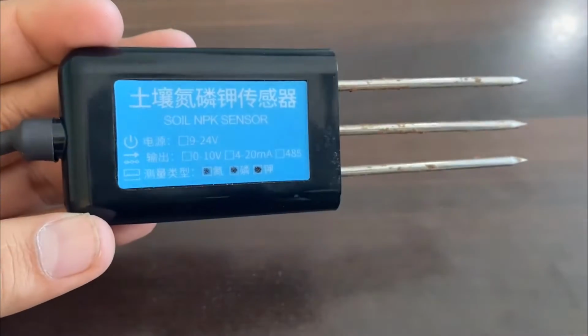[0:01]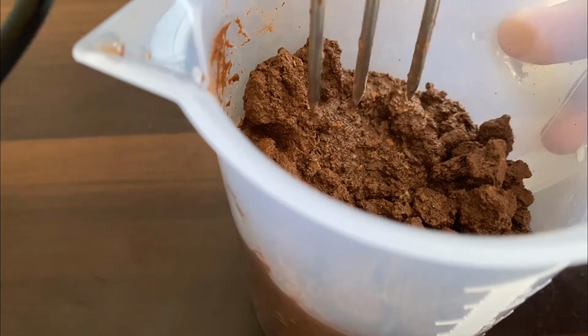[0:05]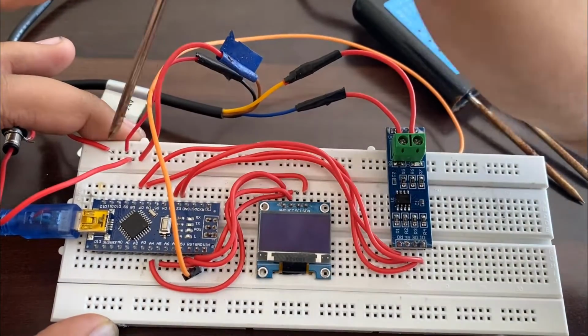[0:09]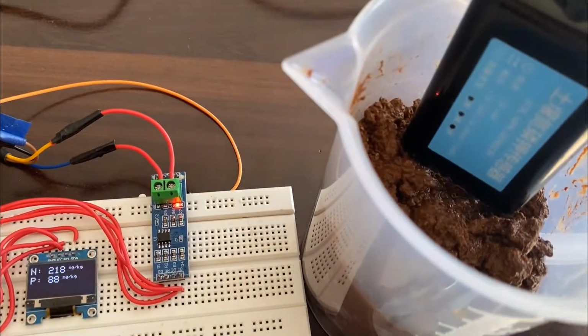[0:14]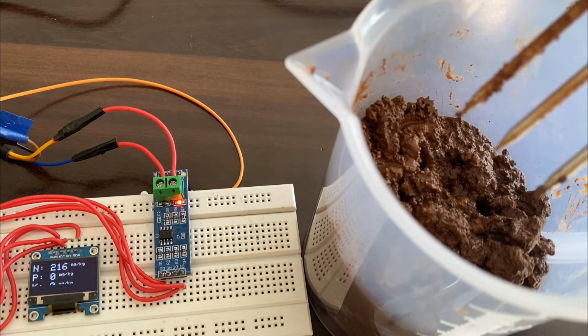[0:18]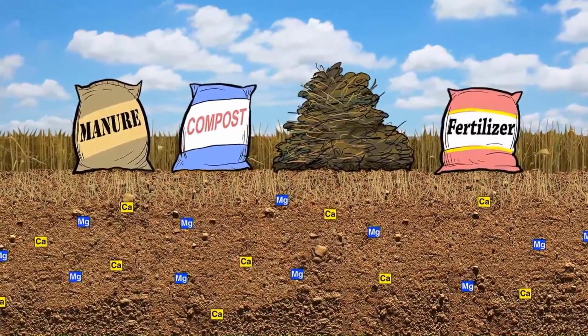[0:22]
In this video, we will learn about the interfacing of soil NPK sensor with Arduino and OLED display. The soil nutrient content can be easily measured using NPK soil sensor and Arduino. Measurement of soil content like nitrogen, phosphorus and potassium is necessary to determine how much additional nutrient content is to be added to the soil to increase the crop fertility.
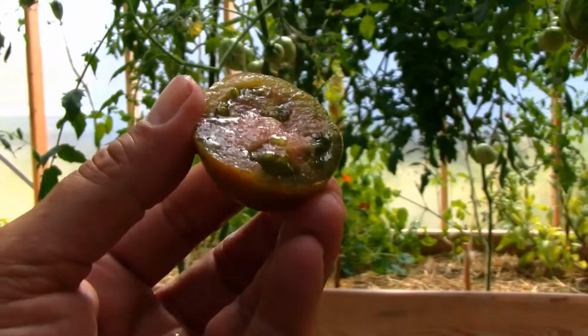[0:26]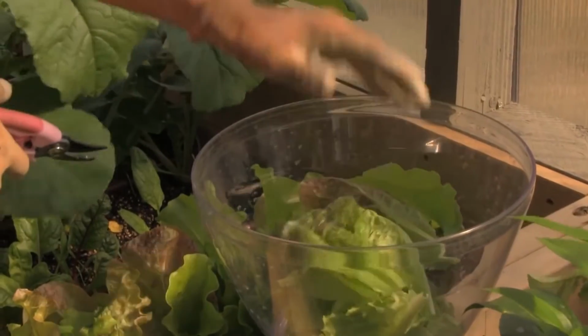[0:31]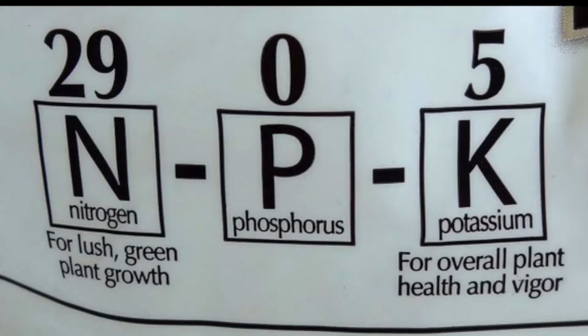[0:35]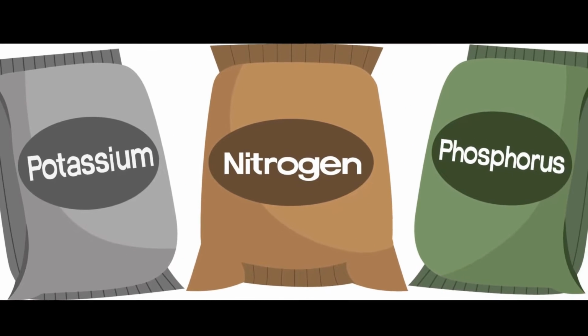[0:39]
The soil fertility is detected using NPK sensor. A major component of soil fertilizer is nitrogen, phosphorus, and potassium. The knowledge of the soil nutrient concentration can help us to learn about the nutritional deficiency or excess in soil used to endorse plant production.
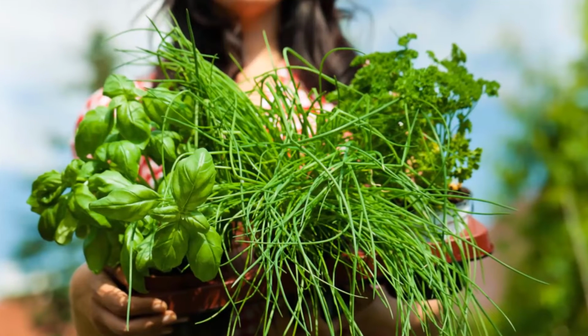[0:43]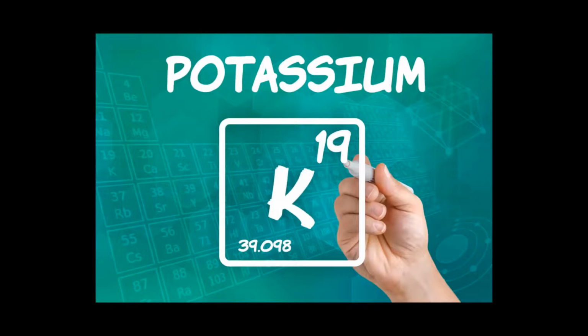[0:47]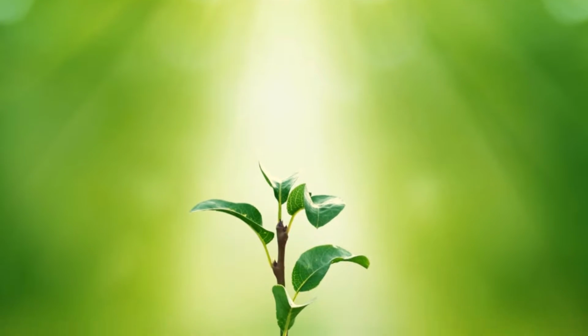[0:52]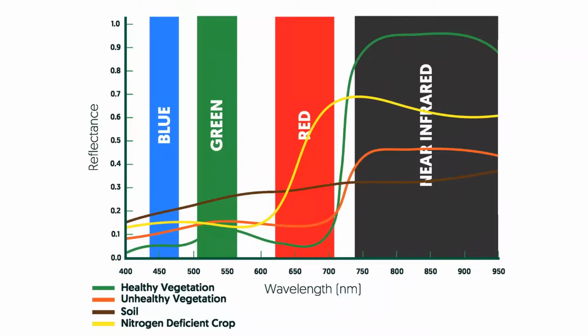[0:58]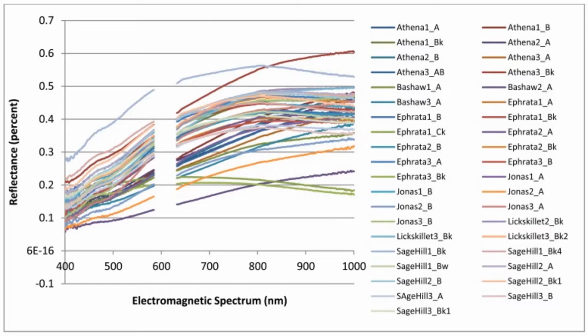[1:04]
There are multiple methods of measuring the soil nutrient content, like using some optical sensors or using the spectrometer. But the spectral analysis method of determining the nutrient content is not convenient, and the drawback is the data are only 60 to 70% correct. While comparing the spectral analysis method with traditional wet chemistry methods, the accuracy of the product is yet to be fully resolved given the paucity of the data in that regard.
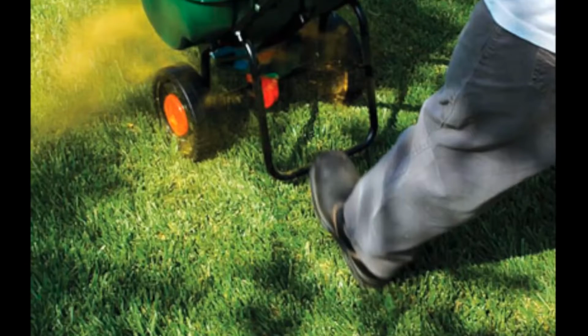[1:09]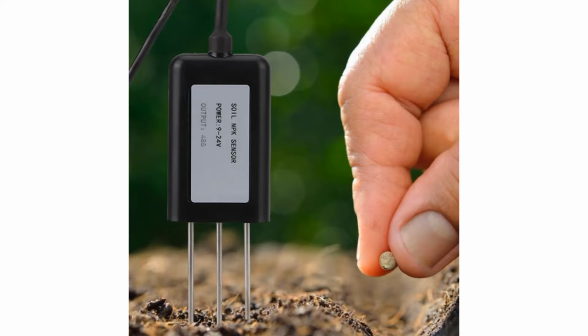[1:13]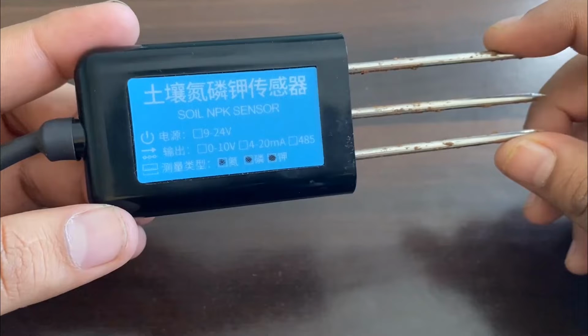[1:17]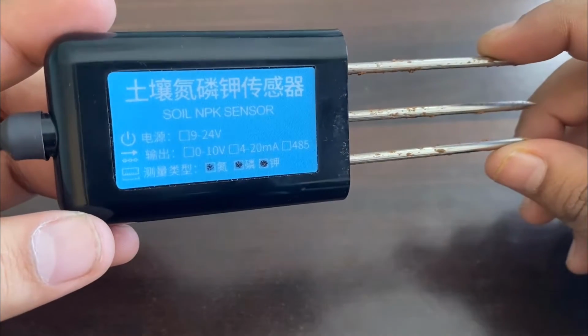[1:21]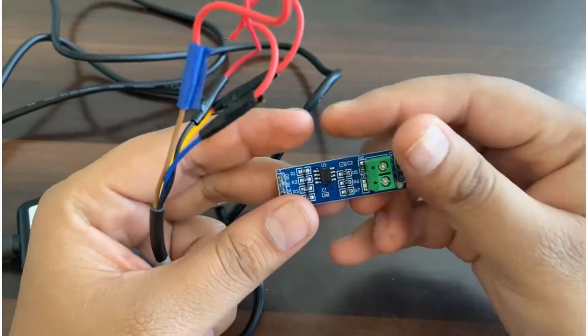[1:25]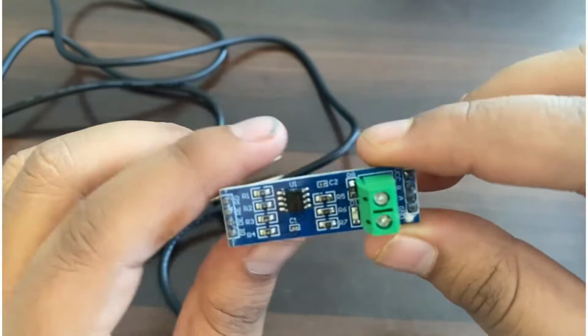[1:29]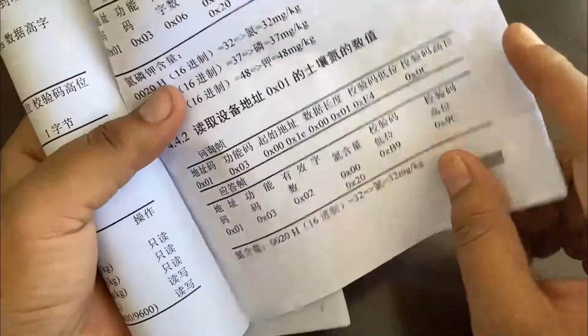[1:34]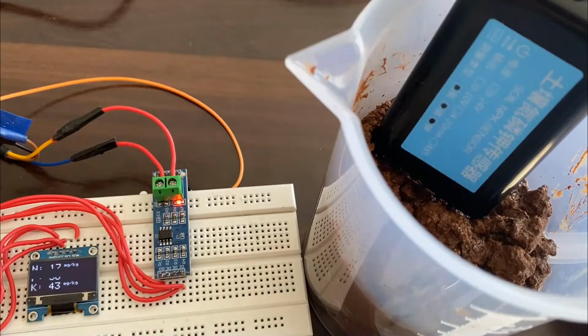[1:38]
So here we will use a GXCT soil NPK sensor to detect nitrogen, phosphorus and potassium in a soil. The GXCT soil NPK sensor is low cost, quick responsive, high precision and portable, and it works with Modbus RS485. The advantage of this sensor over a traditional detection method is that it gives very fast measurement and data are highly accurate. All you need is to insert its probe in soil and get the reading using Arduino. Thus, you can easily make your own soil NPK meter.
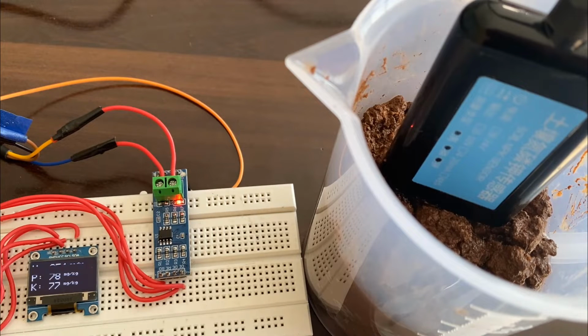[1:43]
So let's learn in detail about the interfacing of soil nutrient sensor or NPK sensor with Arduino and display the NPK data in OLED display.
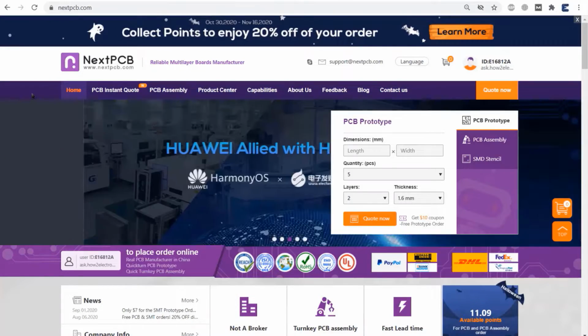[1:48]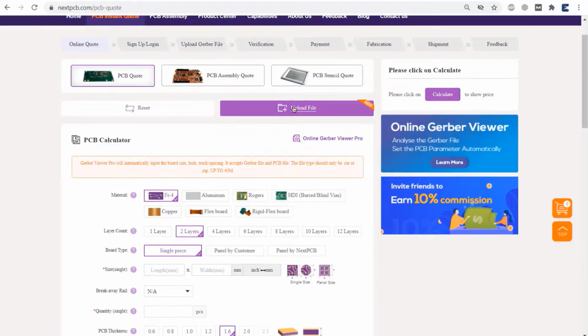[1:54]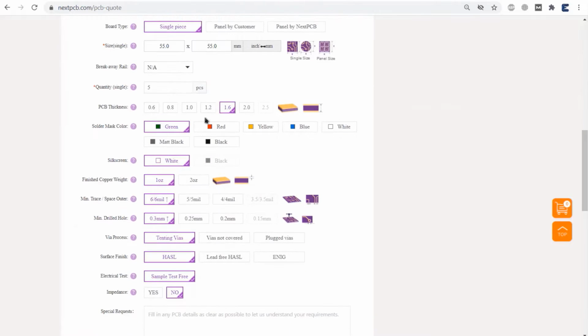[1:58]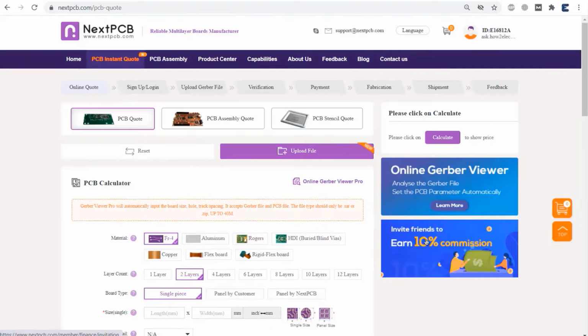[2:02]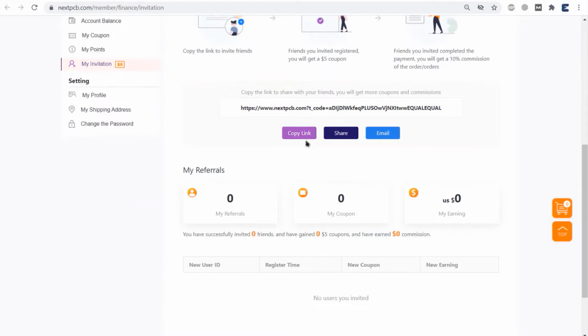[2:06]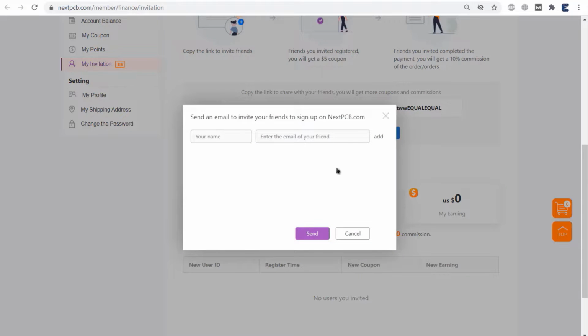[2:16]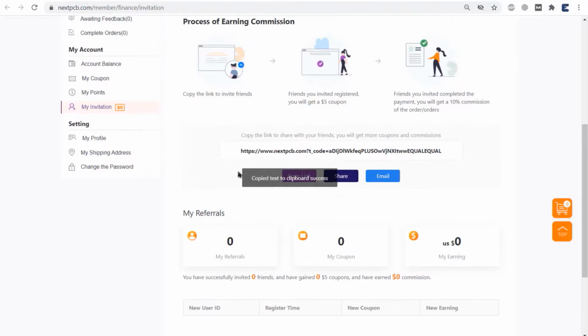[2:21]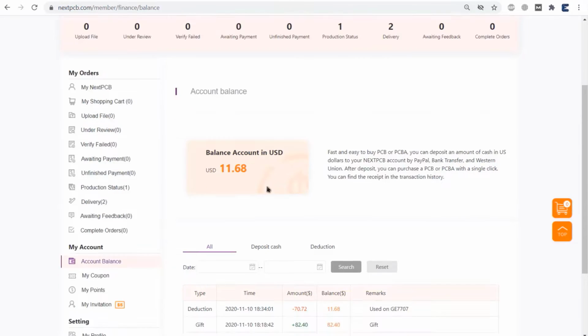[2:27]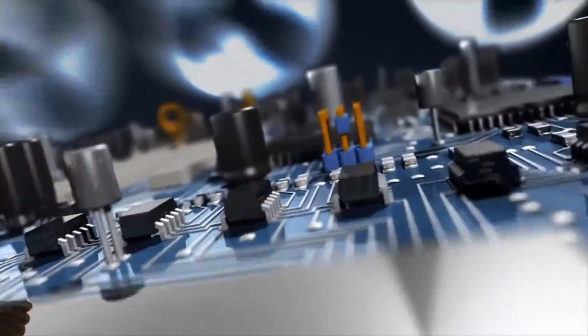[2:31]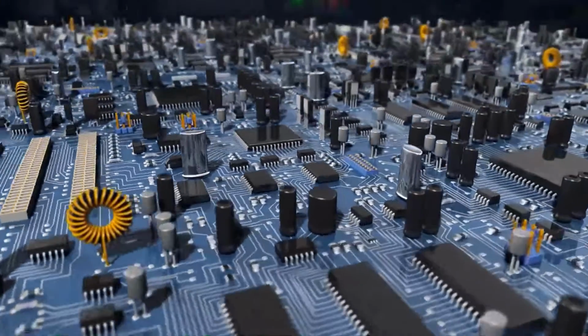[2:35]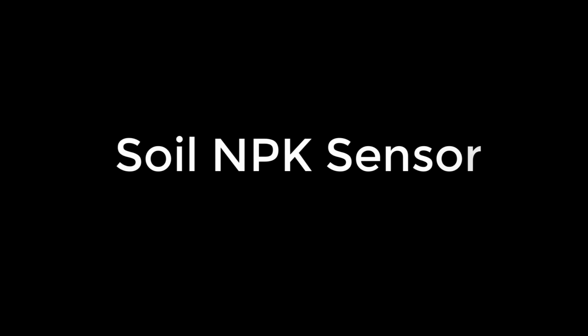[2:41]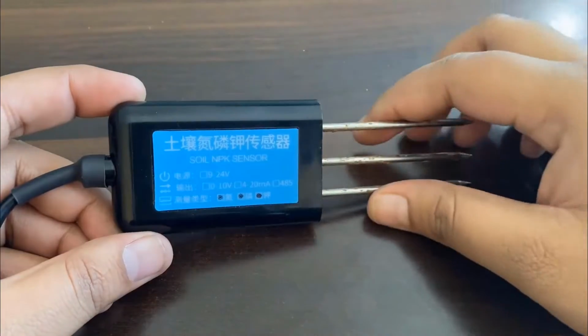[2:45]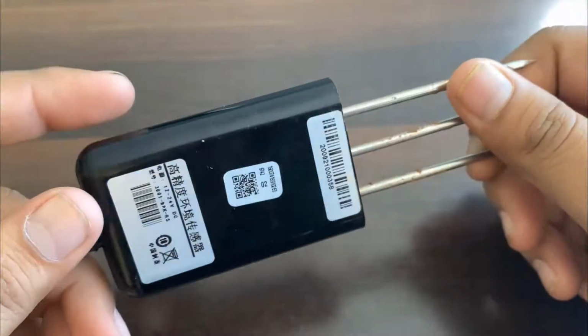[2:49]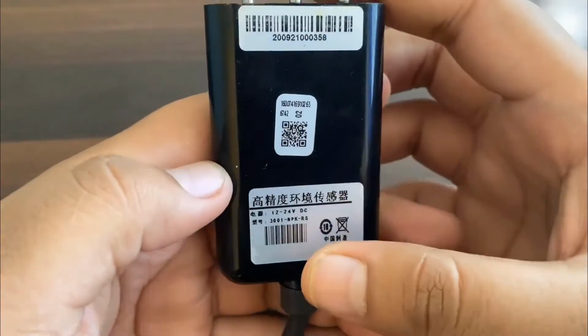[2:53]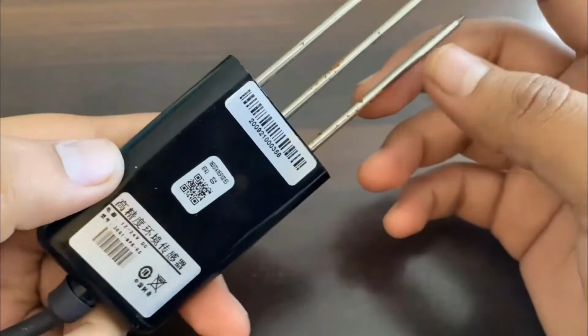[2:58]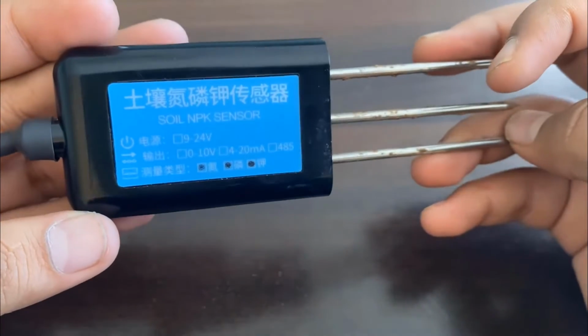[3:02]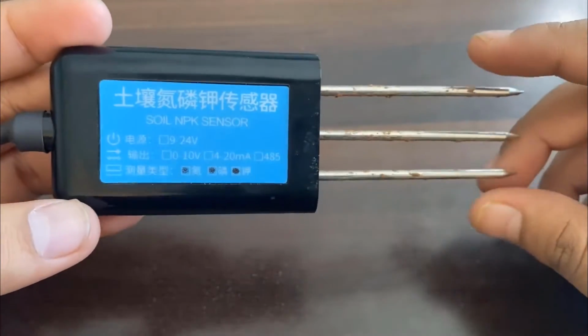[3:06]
Now let's learn about the soil sensor first. So this is a soil NPK sensor that I recently got from some Chinese vendor. This soil sensor is suitable for detecting the content of nitrogen, phosphorus and potassium in the soil. It helps in determining the fertility of the soil, and the sensor can be buried in soil for a long time. It has a high quality probe, rust resistance, electrolytic resistance, salt and alkali corrosion resistance. Therefore, it is suitable for all kinds of soil.
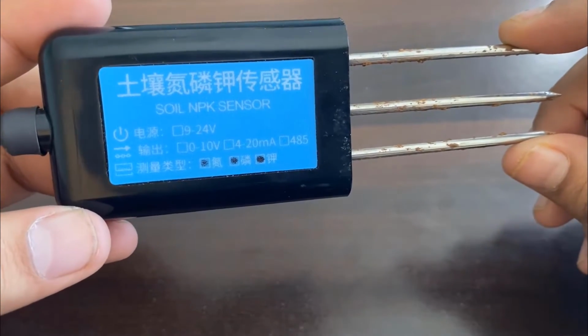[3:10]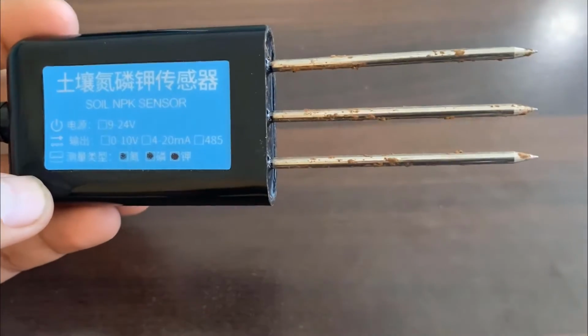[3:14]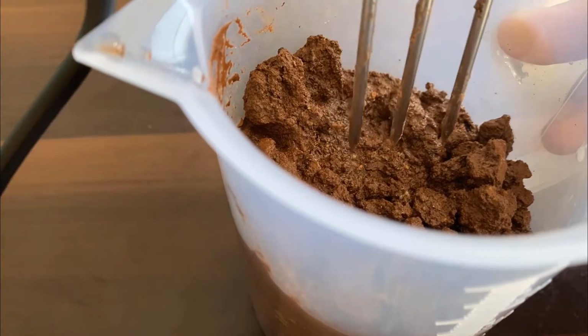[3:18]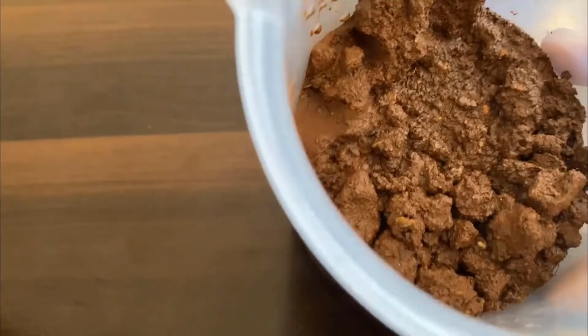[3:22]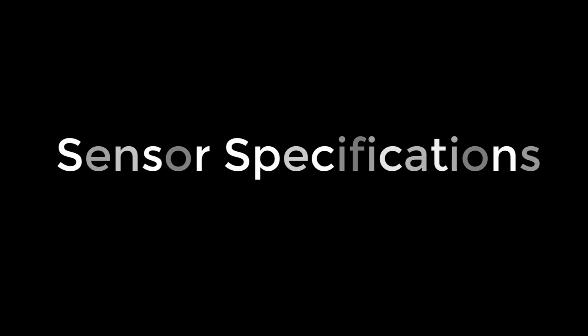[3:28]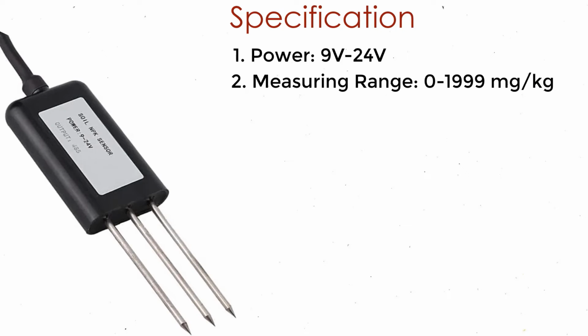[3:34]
The sensor has high measurement accuracy, fast response speed, and good interchangeability, and it can be used with any microcontroller. The sensor operates on 9 to 24 volt and power consumption is very low. While talking about the accuracy of the sensor, it is up to within 2%. Now let's see some of its specification. It works between 9 to 24 volt supply. The measuring range is from 0 to 1999 mg per kg.
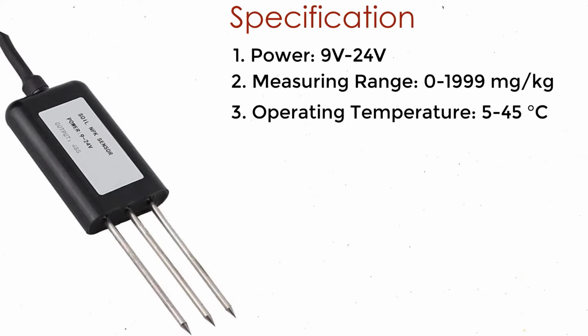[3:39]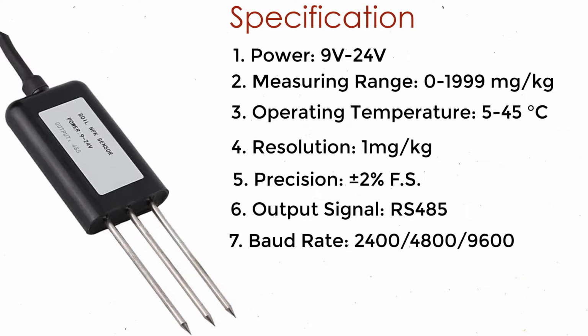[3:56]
The operating temperature is between 5 to 45 degrees Celsius. The resolution of NPK data is 1 mg per kg. While talking about the precision, it's up to 2% plus or minus. The output signal can be read using a Modbus RS485. It has multiple baud rates like 2400, 4800 and 9600. The sensor has a very hard protective layer made using IP68 rating.
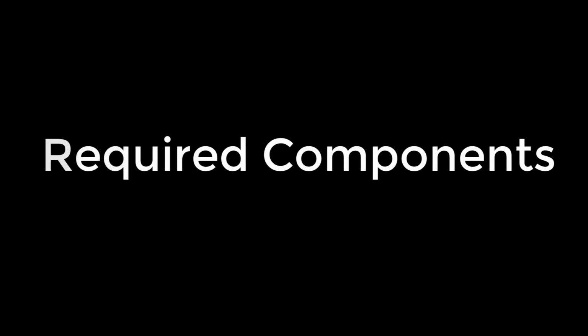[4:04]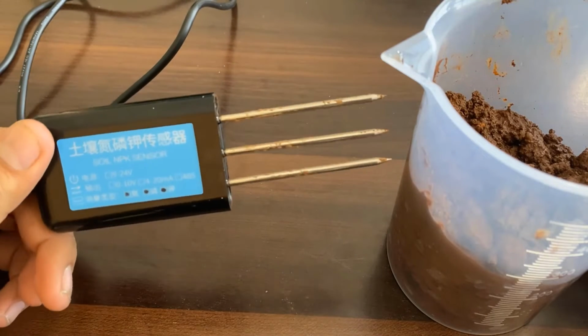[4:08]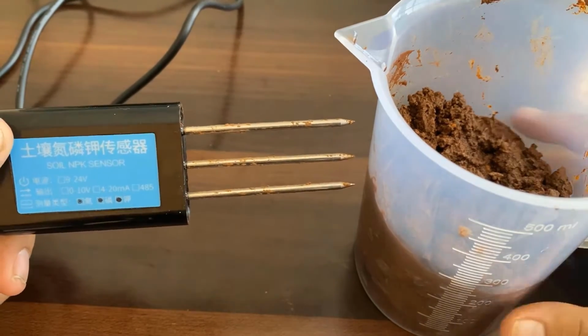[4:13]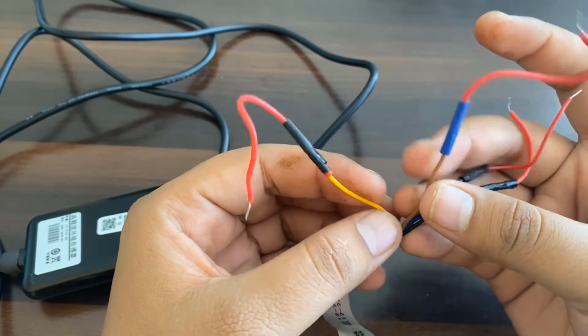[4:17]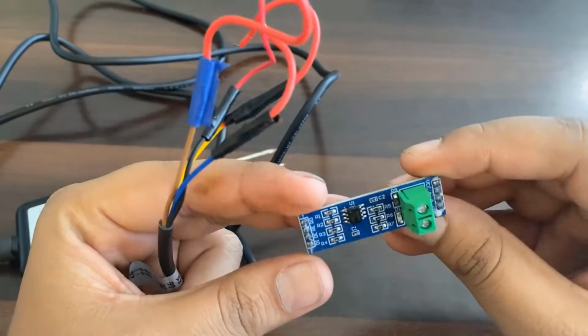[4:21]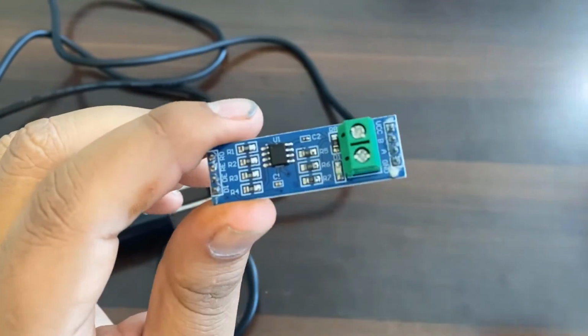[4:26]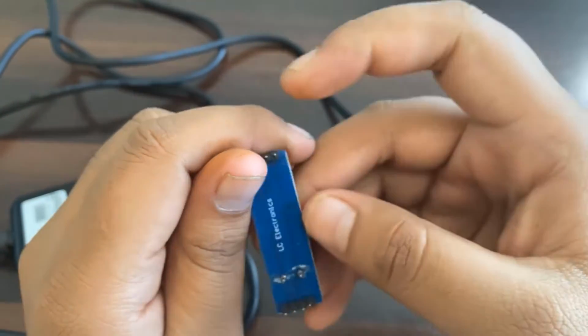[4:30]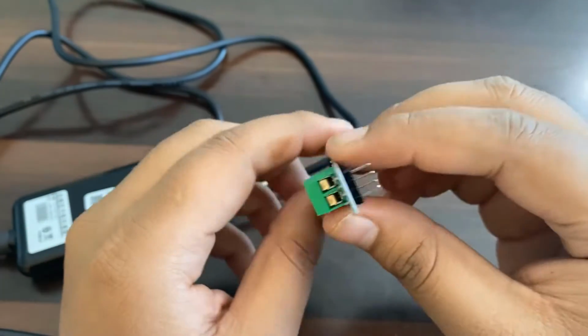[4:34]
To make a soil NPK meter, we need following components. As already discussed, we need soil NPK sensor and few samples of different type of soil. Meanwhile, I'm using red soil from my garden. The sensor has 4 wires and works using Modbus to TTL converter along with 12 volt supply. So here is the MAX485 Modbus module from Maxim Integrated. The module needs to be connected to the NPK sensor to get the NPK reading. I have explained in detail about this module in my website article. You can read about all the pin functions.
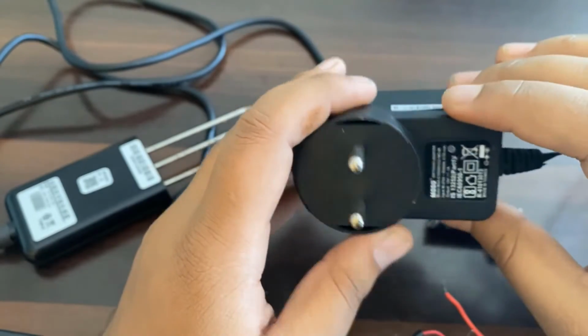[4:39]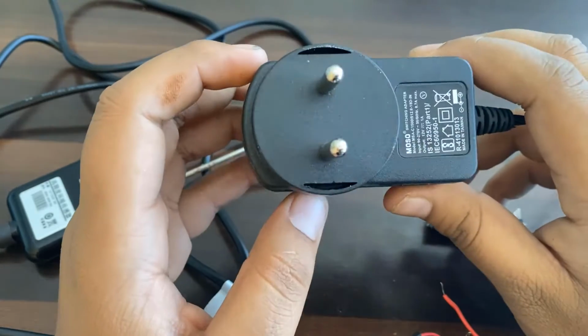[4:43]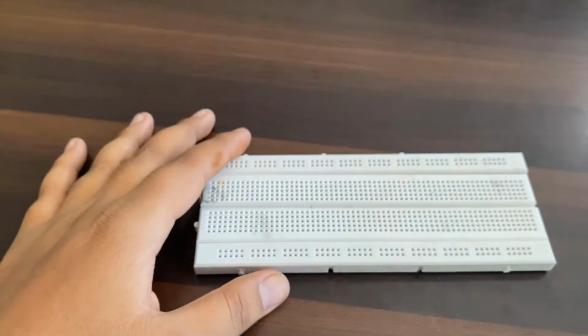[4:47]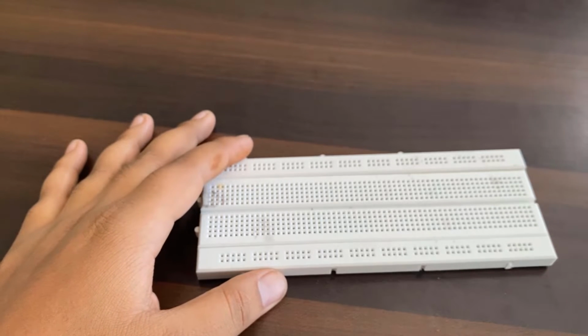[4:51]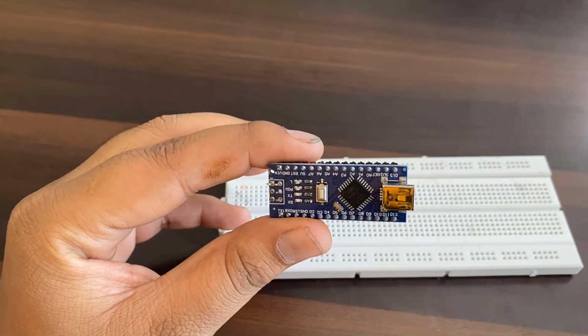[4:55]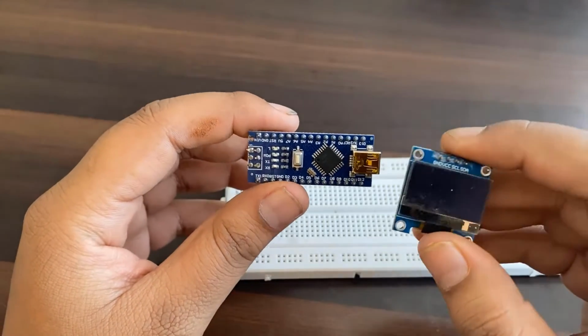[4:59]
We need a 12 volt DC adapter, or you can use any voltage supply from 9 volt to 24 volt to power on the sensor. I have assembled the entire circuit on a breadboard, so you may need a breadboard for that too. Apart from the breadboard, you will need any Arduino board. In my case, I'm using an Arduino Nano board, which is breadboard friendly. Similarly, I used an SSD1306 OLED display where I can display the NPK data. I've shared the purchase link for all the components.
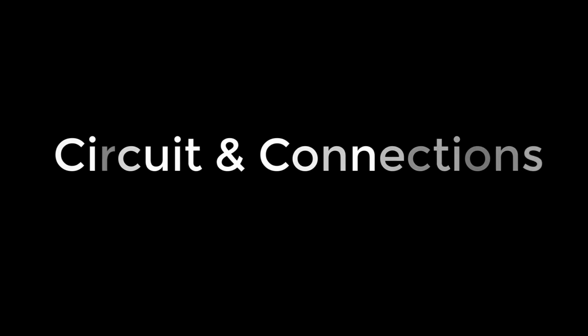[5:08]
So here is the complete schematic and circuit for this project. The RO and DI pins from the Modbus module are connected to D2 and D3 of Arduino using software serial. Similarly, we have to enable DE and RE high, which is done by connecting them to the D7 and D8 pins of Arduino. The NPK sensor has 4 wires.
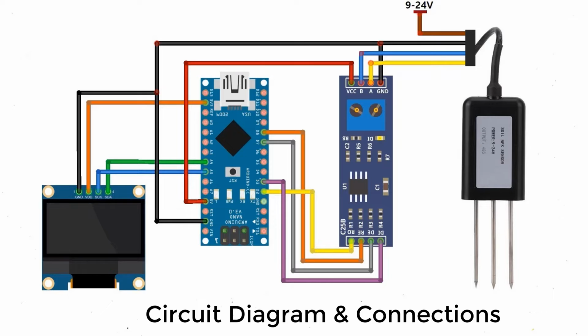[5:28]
The brown one is VCC, which needs a 9V to 24V power supply. The GND pin, which is black in color, needs to be connected to the ground of Arduino. The blue wire, which is the B pin, is connected to the B pin of MAX485. And the yellow wire, which is the A pin, is connected to the A pin of MAX485.
The SSD1306 OLED display is an I2C module. The OLED display VCC and GND are connected to 3.3V and ground of Arduino. Similarly, its SDA and SCL pins are connected to the A4 and A5 of Arduino.
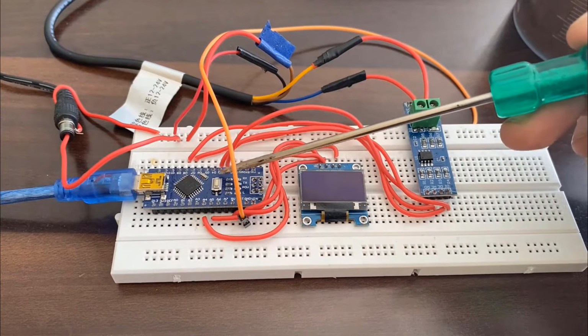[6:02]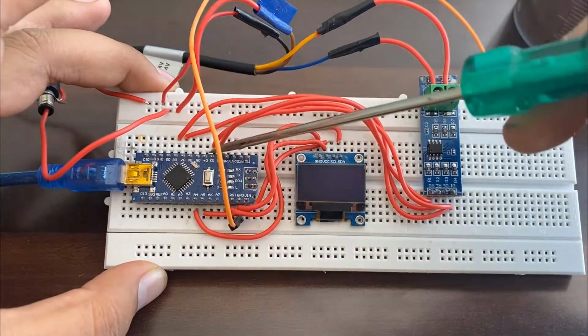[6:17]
So here is the complete assembly on the breadboard. This is the Arduino Nano board. This one, the OLED display, is connected through the I2C pins of Arduino. The MAX485 Modbus pins are connected exactly as per the circuit. The sensor's blue wire and yellow wire are connected to Modbus B and A pins. And I use 12V to power on the sensor.
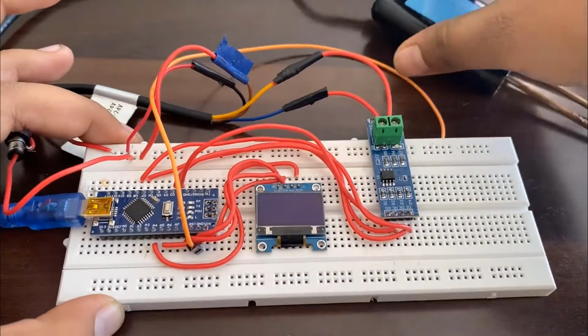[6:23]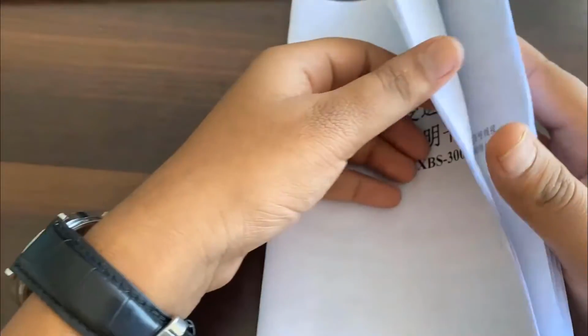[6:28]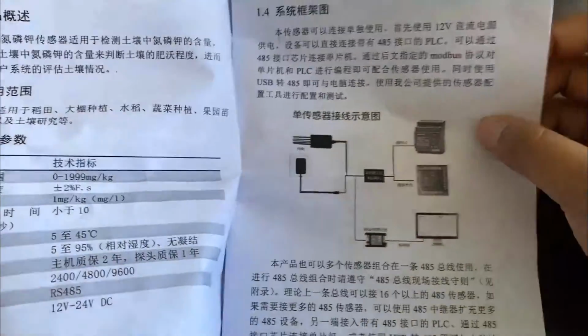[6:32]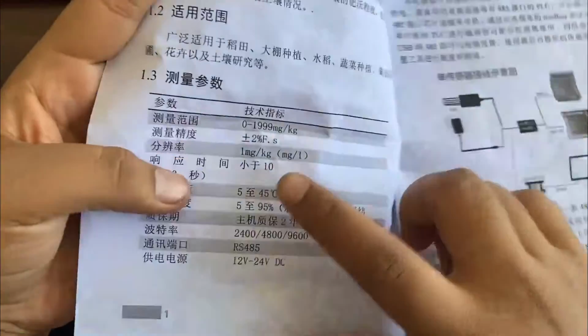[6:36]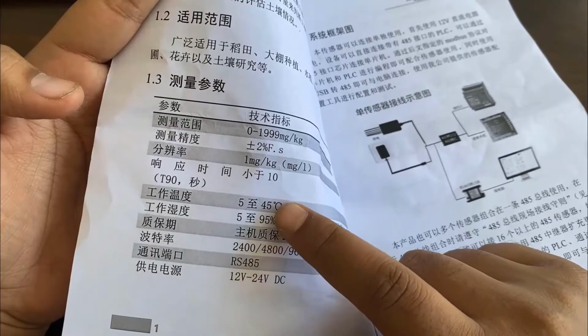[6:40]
Now let's move to the code part of the project. But before that, read the instruction manual that is provided with the sensor. The instruction manual that I received is in Chinese language. I don't know what is written here, but I can understand the technical part of this manual, which can be used in code.
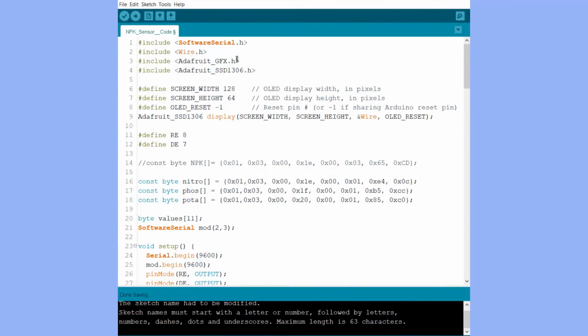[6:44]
So in the code, we begin with software serial and we define the TX and RX pins as pin 2 and 3. The Adafruit GFX and SSD1306 libraries are for the OLED display. In these lines, we define the parameters for the OLED display and create instances. The RE and DE pins of the sensor are defined here.
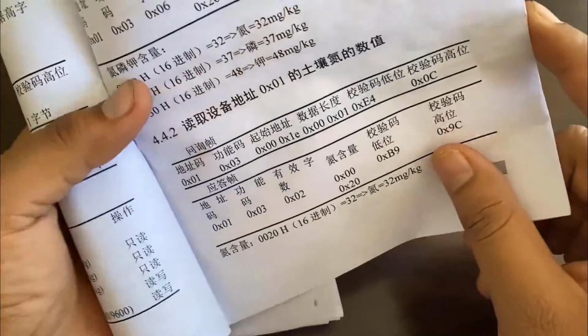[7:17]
Now, the most important part is this byte data. This works as a command to retrieve the data using Modbus from the NPK sensor. This one is for getting the nitrogen value in soil. I got this command from the instruction manual. You can see this in this manual.
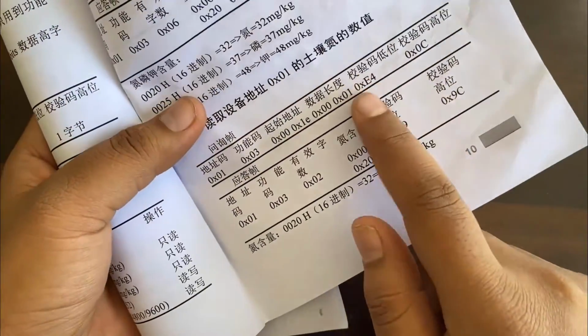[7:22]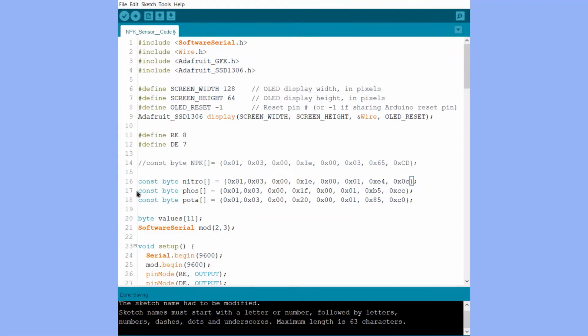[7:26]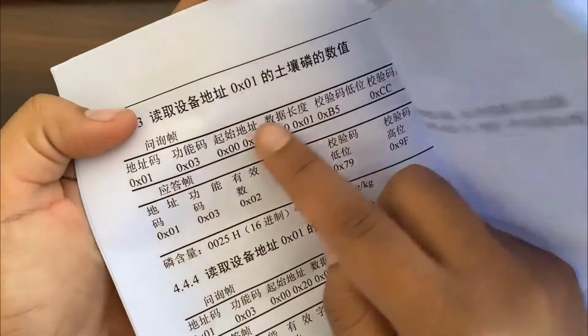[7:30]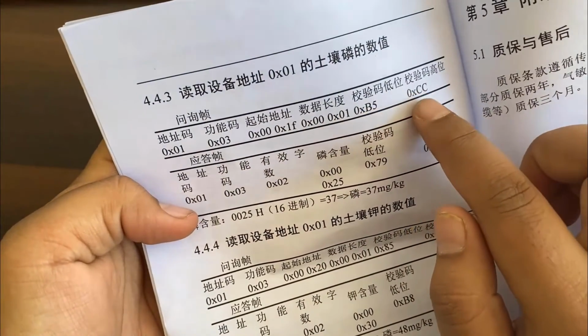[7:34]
The Chinese documentation still worked. I use this same line in the code. Similarly, this line is for phosphorus. The instruction byte or data is again given in this manual, and I use the same. The same thing applies to potassium also. The potassium instruction byte is also taken from the manual.
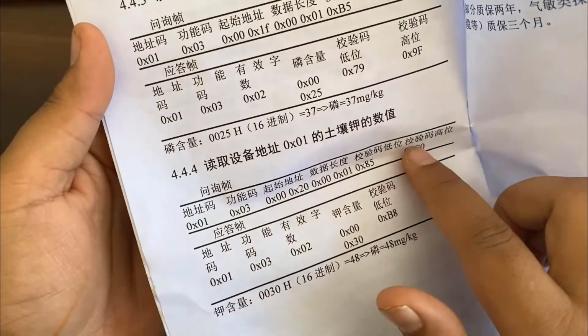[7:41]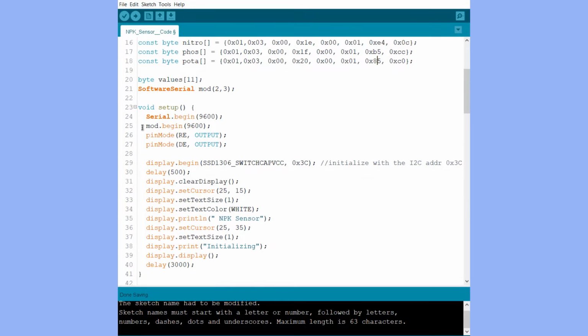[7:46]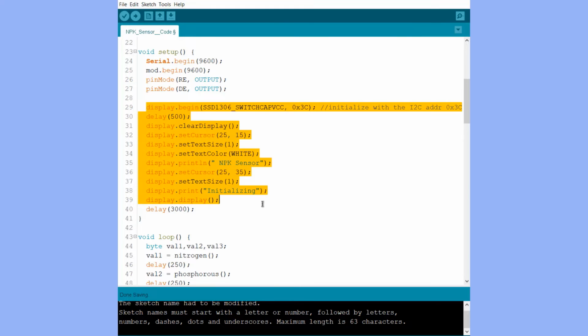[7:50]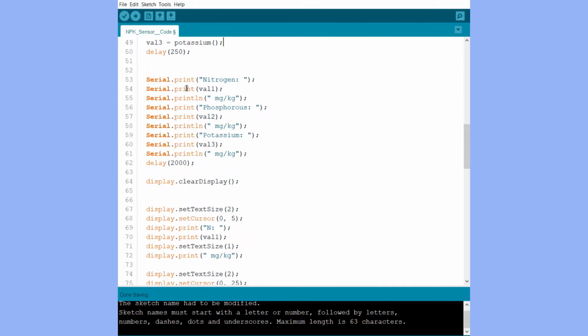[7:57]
Alright, in the setup section, we initialized serial begin and Modbus begin along with the OLED display, and kept RE and DE as output. We assigned 3 variables as value 1, value 2, and value 3, for nitrogen, phosphorus, and potassium. Then, using this line, we display the NPK value in the serial monitor as well as the OLED display. In this byte function, we are enabling DE and RE pins as high, and using the sizeof function and array assignment, we are retrieving the value of nitrogen from the sensor.
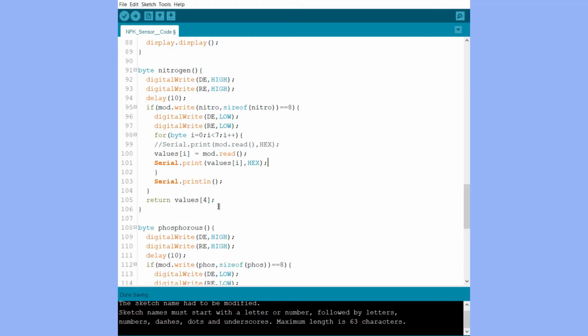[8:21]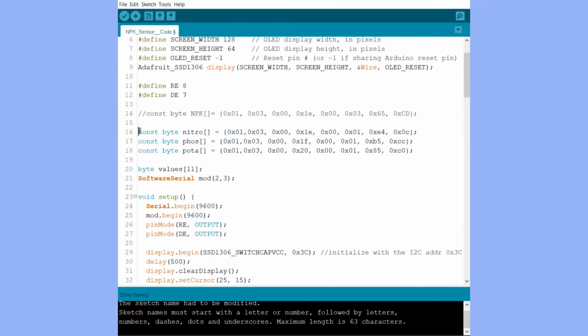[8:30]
These are Modbus commands, which are a little complicated. Then we are printing the value of data in hexadecimal and converting it into decimal. Again, we are retrieving the value of phosphorus and potassium using the same command. That is why I explained why this line is very important. If you don't know the value of this register or data, you cannot read it.
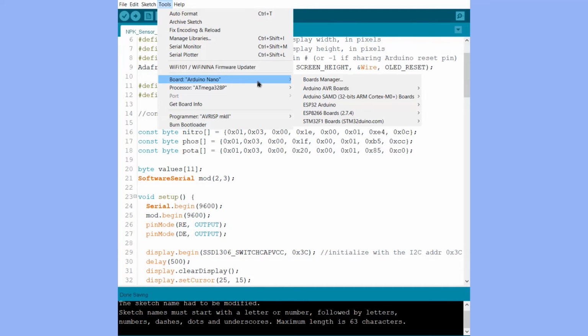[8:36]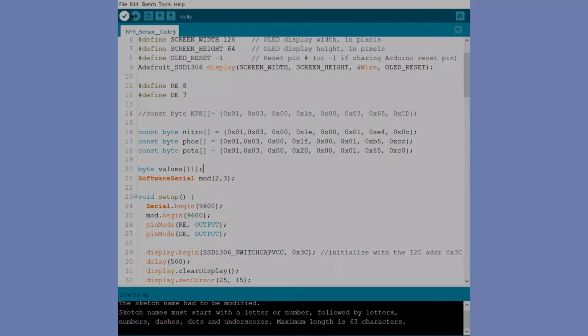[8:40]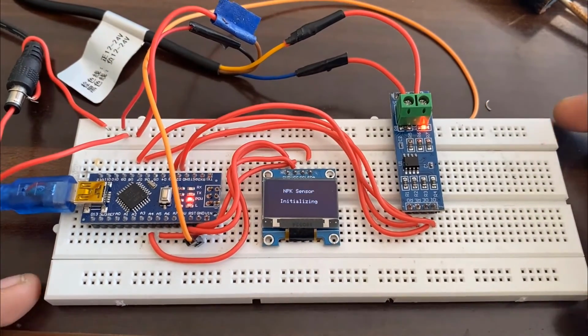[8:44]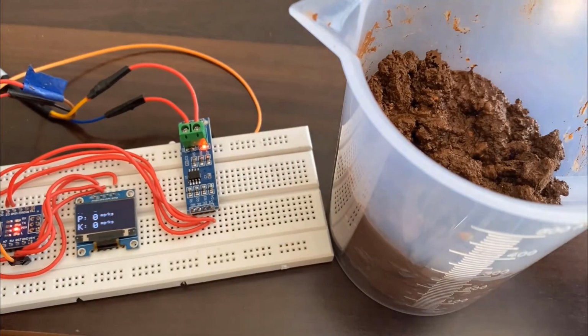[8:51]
Now, all you need is to select the right board and upload the code to the Arduino Nano board. After uploading the code, the OLED will display the initializing message, and soon it will display the values of nitrogen, phosphorus, and potassium as 0. So here is a sample of soil I've taken in a container.
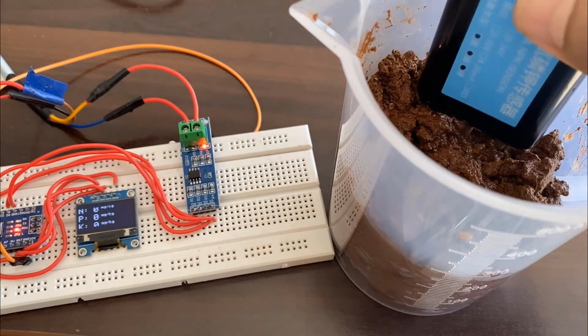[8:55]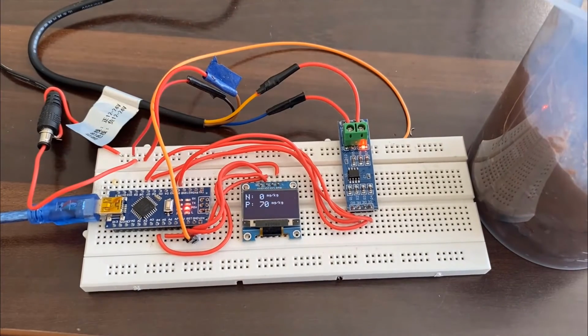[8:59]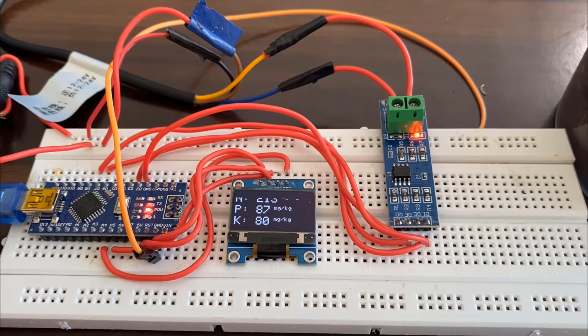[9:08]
Now, when I dip the sensor probe in the soil, it will start collecting the soil data, and soon it will display the content of nitrogen, phosphorus, and potassium. So the nitrogen in the soil is about 220 mg per kg, phosphorus about 90 mg per kg, and potassium about 80 mg per kg.
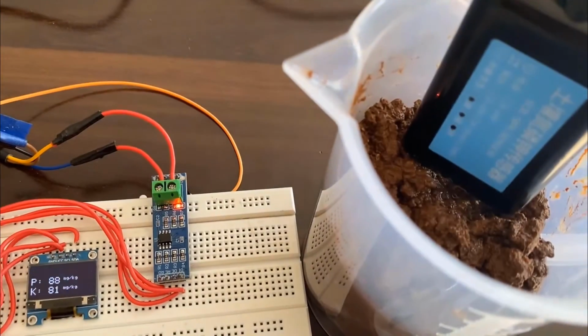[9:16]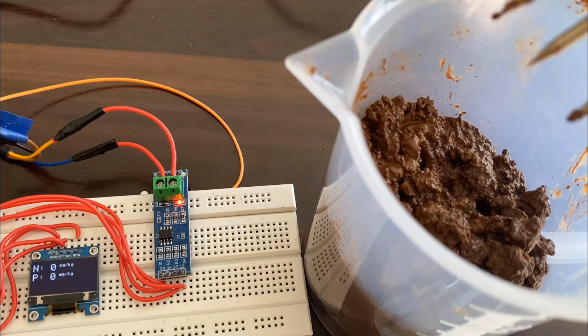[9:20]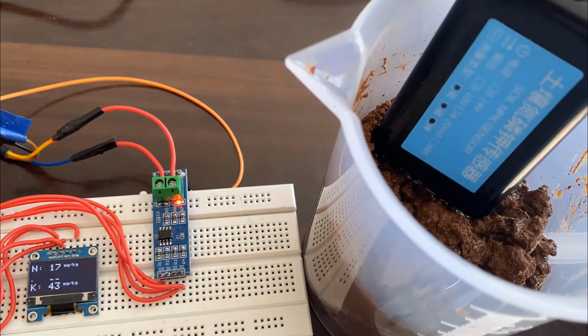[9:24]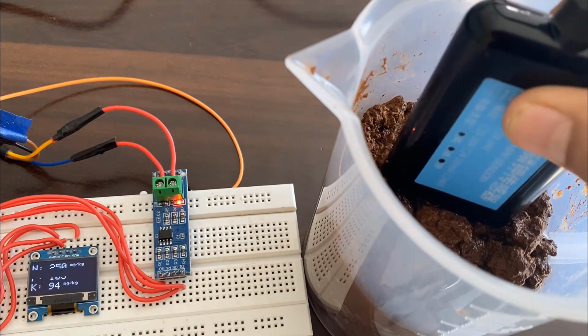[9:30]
When the sensor is removed from the soil, the value soon reaches 0. And when it is dipped again, it will show some other values. So this is how we can use an NPK sensor with Arduino to measure the soil NPK content or soil nutrients.